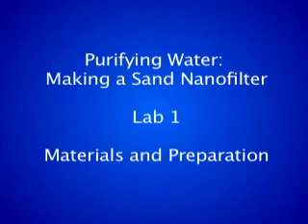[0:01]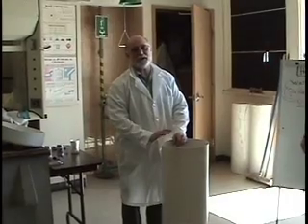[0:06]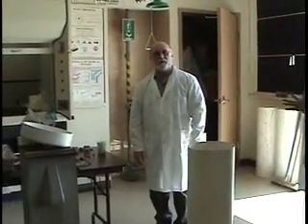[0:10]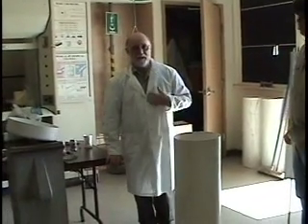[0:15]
At Santa Maria High School in California, what we're doing in this chemistry class today is filtering water as part of an RET project. That's a research experience for teachers. I'm David Mann, and I spent last summer at UCSB.
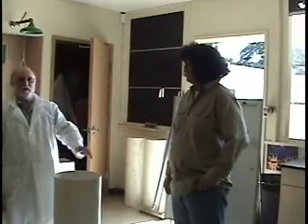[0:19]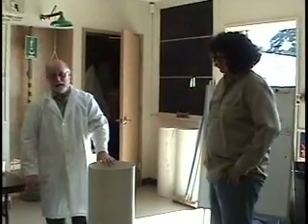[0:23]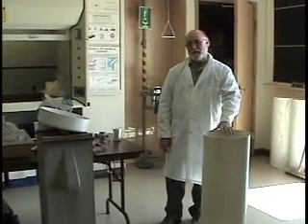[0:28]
Robert Duran is a chemistry student here at Santa Maria High School. He is the vice president of our club. And what he's doing today is he's going to be making a sand filter as part of a chemistry project.
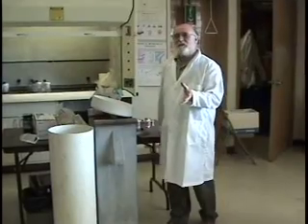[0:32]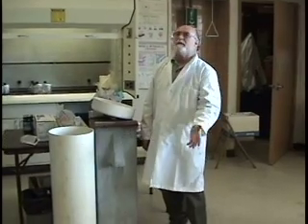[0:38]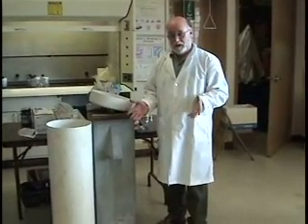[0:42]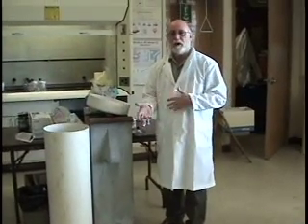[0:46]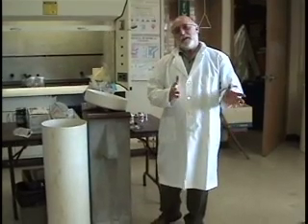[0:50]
The objective is to make as clean a water as we possibly can and to remove any large particles. We're not at the nano scale, but the objective of the class is to teach size and scale, going from very small particles that are dissolved in water and suspended in water, and to teach the class about the size of particles that can be removed with the sand filter.
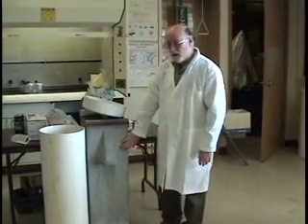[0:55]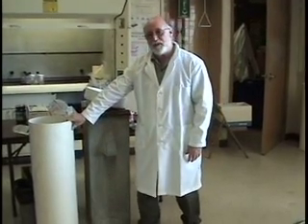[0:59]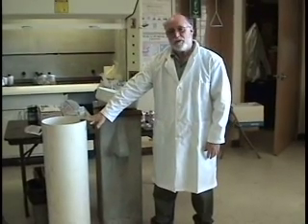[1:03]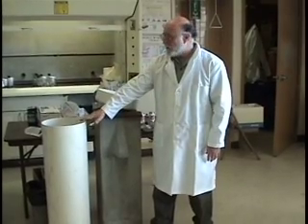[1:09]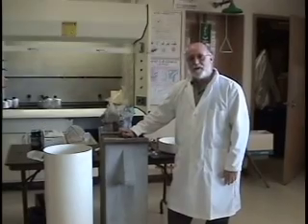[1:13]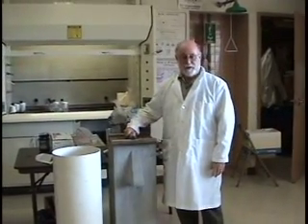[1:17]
So this is a concrete sand filter, and what we're making today is one out of PVC pipe. The pipe can be obtained at a commercial supply store, like an irrigation supply store, not your local handy hardware store, but this happens to be 12 inch in diameter. This past summer I was doing research at UCSB as a research experience for teachers using a concrete sand filter.
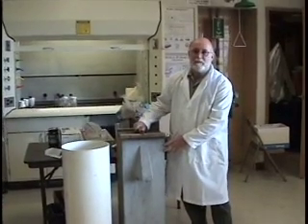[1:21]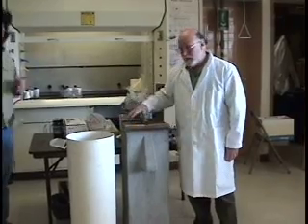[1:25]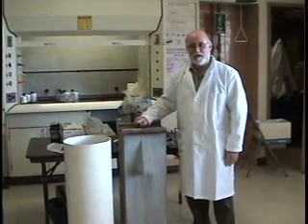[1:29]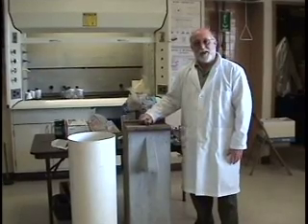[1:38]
I actually had about 7 of these and one that was PVC, and I was able to remove very small particles, and I was surprised that they were so effective. I was actually able to remove nano-sized particles using a sand filter. I have a theory about why that happened.
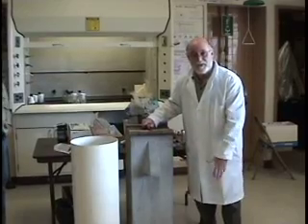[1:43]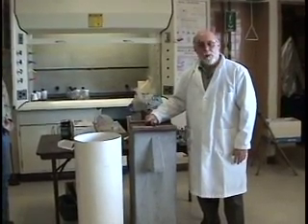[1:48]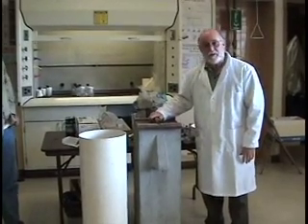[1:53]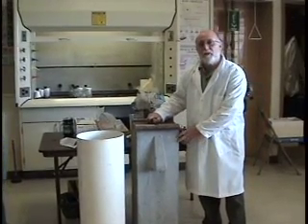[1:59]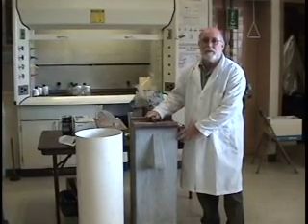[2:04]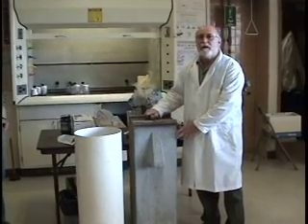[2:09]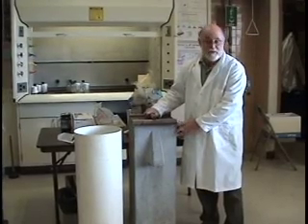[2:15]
I would expect that the small nanoparticles would pass through the mechanical filtration, but I have a theory that the nano-sized particles were removed possibly because of some kind of electrical charge that was created on the surface of the sand. Normally we would expect bacteria-sized particles to be removed, but viruses, not likely, based upon just mechanical removal. So something's going on in the biosand filter to be able to remove those very small nano-sized particles, which I was surprised were that effective. These are effective over the 90% level of removing pathogens.
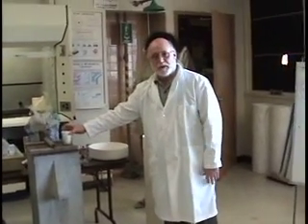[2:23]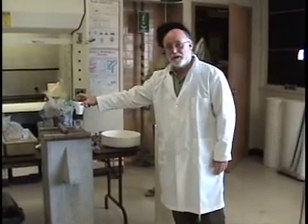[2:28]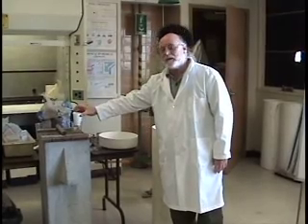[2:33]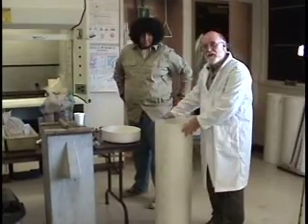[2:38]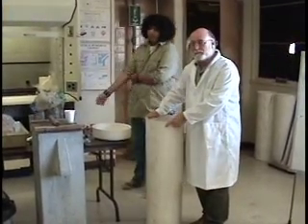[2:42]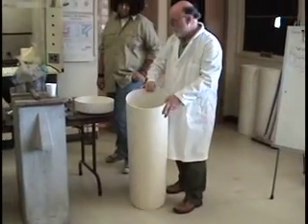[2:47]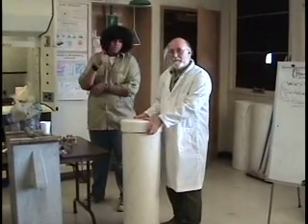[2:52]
So what Robert's going to do today is an extension of the class project, which was to do water filtration using the chemistry in the community laboratory on foul water. He's going to extend it, and instead of a small sand filter, we're going to try and make a large sand filter and duplicate what I did last summer with the concrete sand filter. So we have a large 12-inch PVC pipe, and Robert's going to prepare the cap that is going to go on top. This will actually be the bottom of the sand filter.
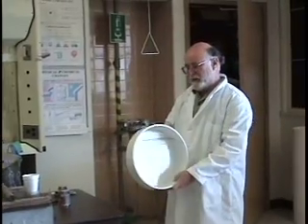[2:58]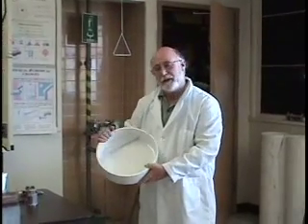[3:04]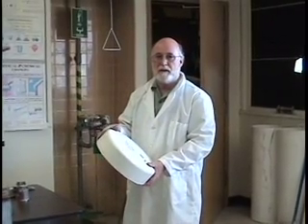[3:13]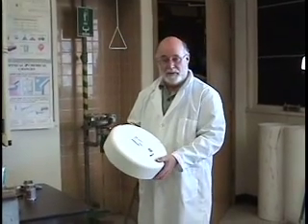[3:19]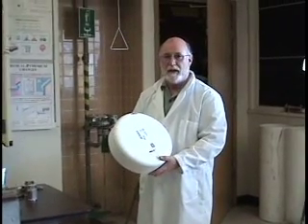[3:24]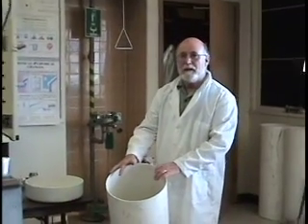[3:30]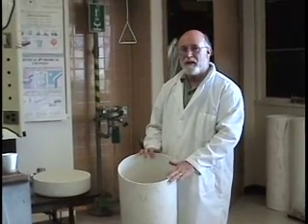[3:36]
We have a 12-inch diameter PVC cap that can be purchased at a commercial agricultural irrigation store. This particular piece costs $69. Grants are available, usually from the State Department of Education, wherever you work, and these small grants can help pay for these materials. For this activity, monies were provided through UCSB and the grant that is supported by research. This piece of PVC pipe, again, is obtained through an agricultural irrigation store, and the funding was from the National Science Foundation for these materials that we have here in the classroom.
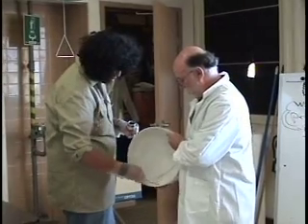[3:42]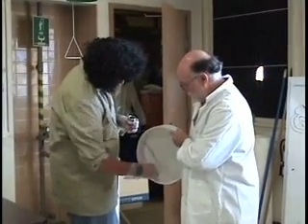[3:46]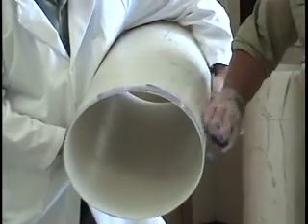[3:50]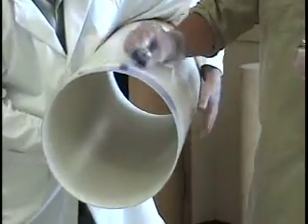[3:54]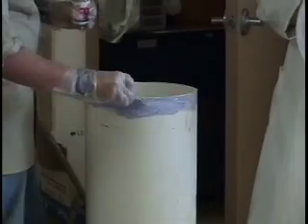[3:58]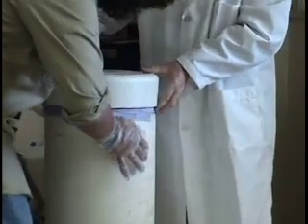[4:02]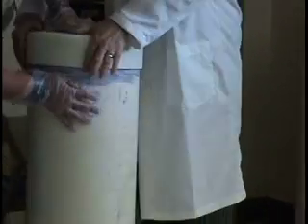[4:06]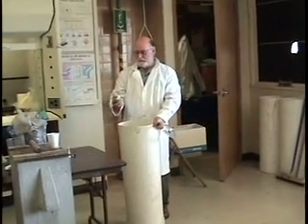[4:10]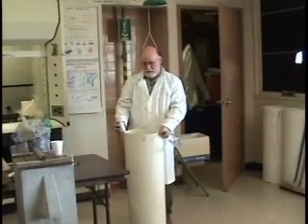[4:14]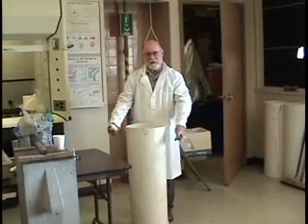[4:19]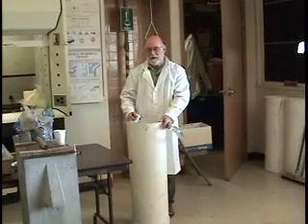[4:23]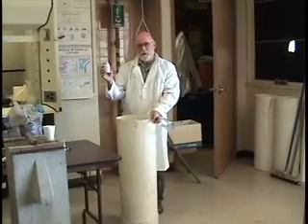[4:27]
Here, we have to put the primer on the cap to seal it when we put it on the filter. You want to do this in a well-ventilated classroom. The setting time is about 2 hours. There's no pressure per se, so this is going to be a gravity feed water filter, so all you need is just a seal to seal off any water leaking. There's not going to be any pressure, so a 2 hour time set for the cement is adequate.
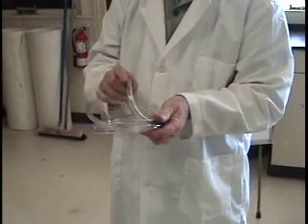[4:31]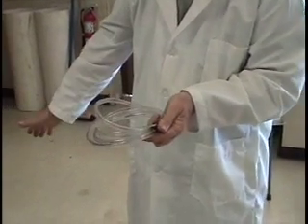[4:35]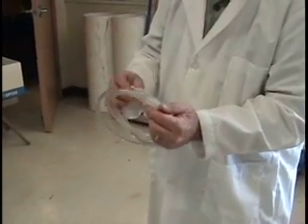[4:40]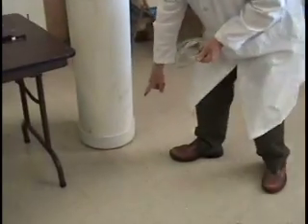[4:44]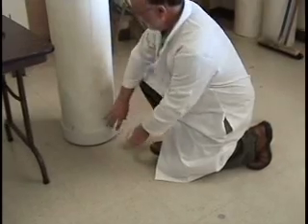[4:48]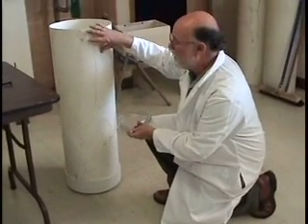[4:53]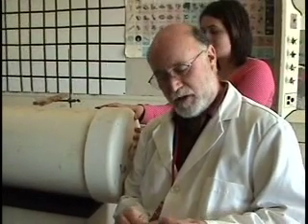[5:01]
Okay, what we are going to do now is insert our plastic tubing into our sand filter. Its inside diameter is 1/4 inch, outside diameter is 3/8, so we're going to need to drill a hole in the bottom of the sand filter and insert our plastic tubing and then strap the tubing on the side of the filter so that it stands upright, and then we can basically start filling it up with sand and gravel.
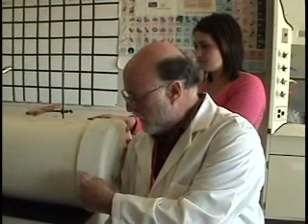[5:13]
Here we are at Santa Maria High School the next day, and what we're going to do is place a 3/8 inch rubber tubing into the sand filter. Now that we've got the cap glued on the bottom, we're going to take a 3/8 inch drill and drill a hole about halfway through the cap, and it's going to be at the bottom of the sand filter.
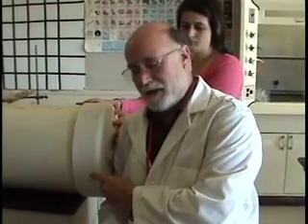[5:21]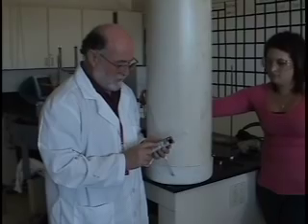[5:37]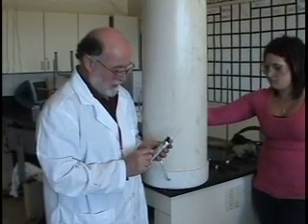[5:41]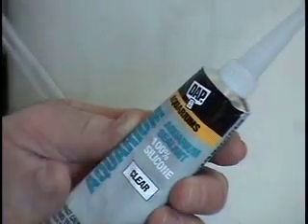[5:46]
So we're placing the hole at the bottom of the sand filter, but you can't put it so far down that a person can't reach from the inside and lay a seal on the inside of the plastic tubing. This is 3/8 inch diameter. We place some aquarium sealer. This is 100% silicone seal, and it's clear, and they use it in aquariums to seal the aquariums from leaking.
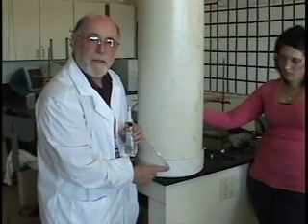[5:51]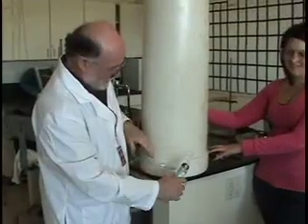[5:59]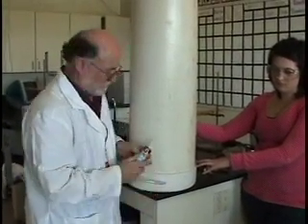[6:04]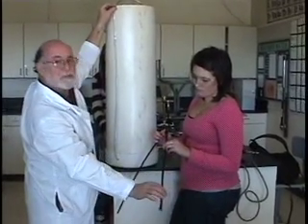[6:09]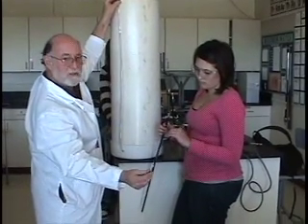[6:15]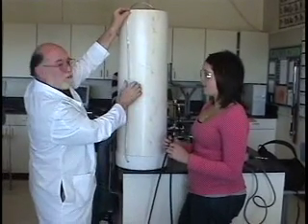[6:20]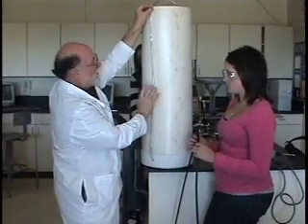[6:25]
We're going to place a bead of this sealer around the tubing, and then have a student with really long arms reach inside of the tube and lay another layer or bead of the silicone sealer around on the inside. So we've got these electrical strappers, as big as I could get them. They're like 24 inch long, 59 cents each. And we're going to put two of them together so we can go around the sand filter to hold the plastic tube up so that it will stay up next to the pipe.